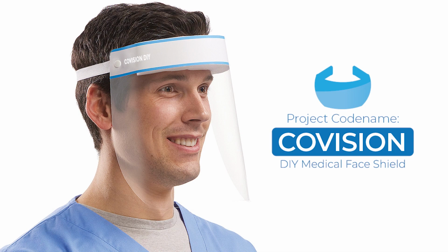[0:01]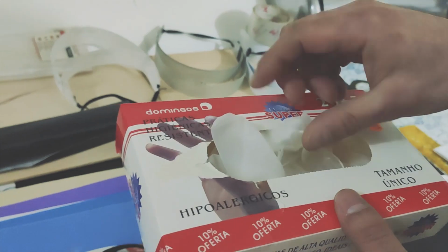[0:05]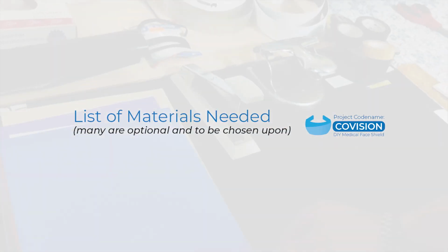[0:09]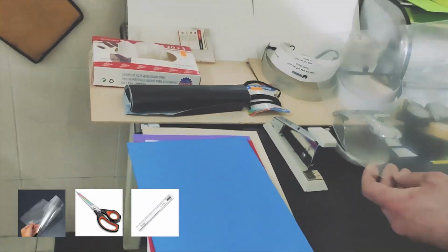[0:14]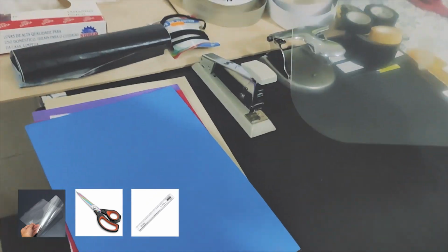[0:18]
So you can be a hero with your family and save lives. So take this DIY challenge and let's do something. In this documentation, we'll learn the basics of how to produce these highly functional face shields using very cheap or readily available household materials. You don't need a 3D printer, you don't need engineering skills, it's easy.
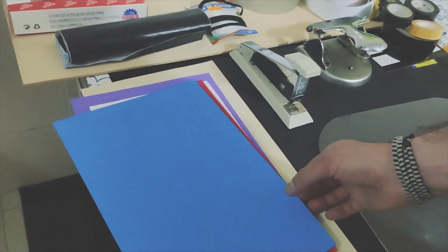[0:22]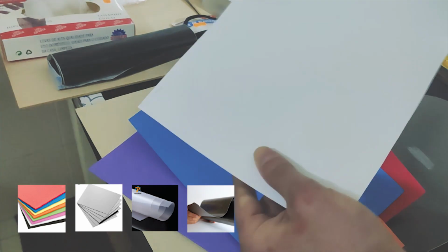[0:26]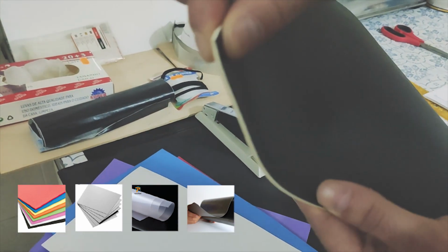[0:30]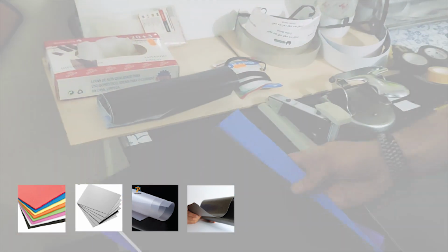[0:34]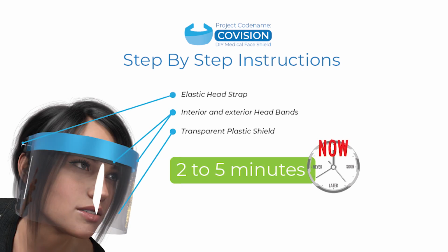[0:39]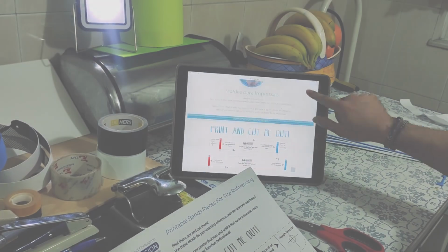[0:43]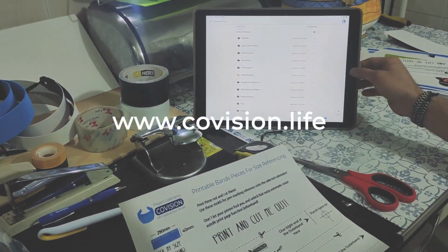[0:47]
Well, we have a lot of materials that we can choose from, ranging from foam sheets, thick poster card, plasticized if possible, flexible plastic sheets, or a wide range of synthetic materials, and try to get them in A4 format. You can visit www.covision.life so you can follow the on-screen instructions so you can make something along these lines. So let's start.
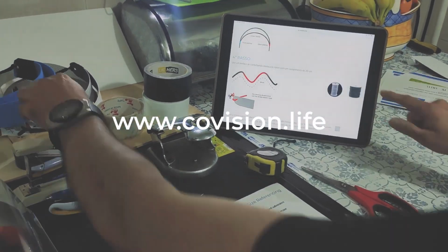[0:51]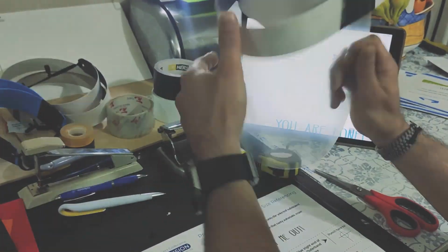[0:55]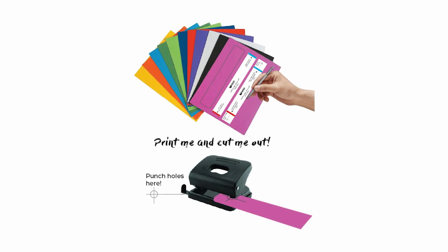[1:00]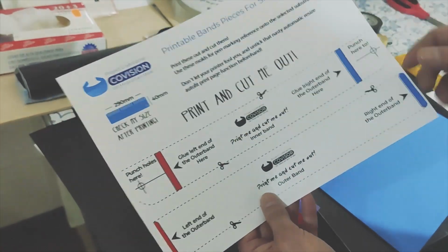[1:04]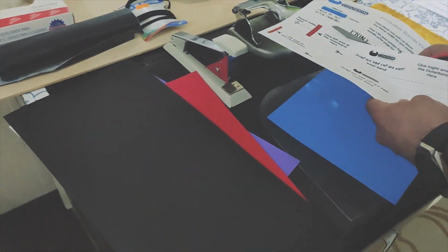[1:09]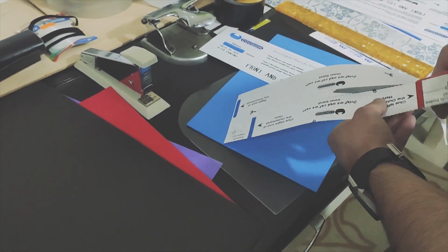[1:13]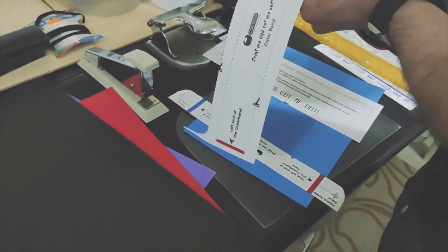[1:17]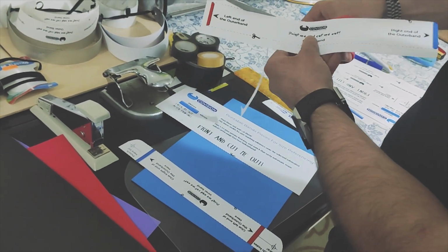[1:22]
Go ahead and print the molds. I already prepared the file, so you just have to download it and cut it, and tick that printer's automatic resize function so you can get the correct size. And please check in the end if you got the 290 millimeters by 40 in each band. They have to be equal. So you can download and print this out. These are just some molds to help you out.
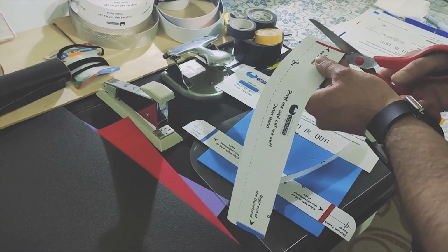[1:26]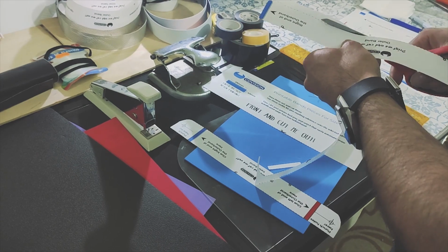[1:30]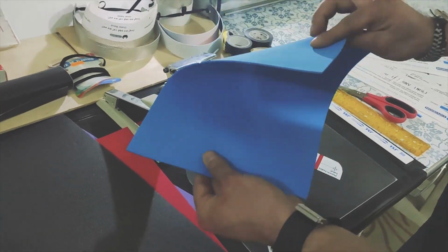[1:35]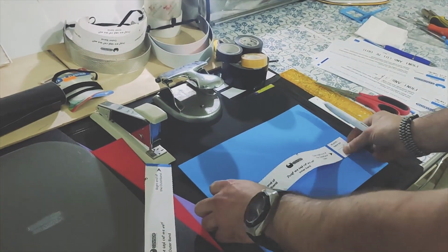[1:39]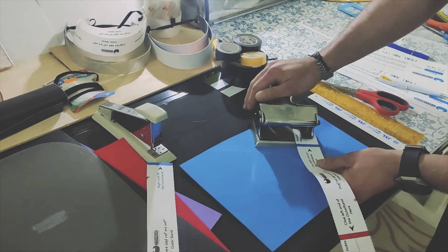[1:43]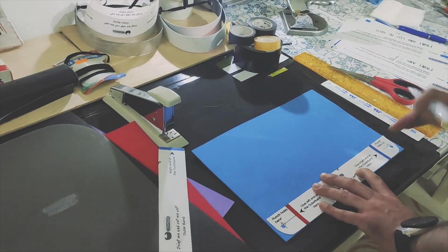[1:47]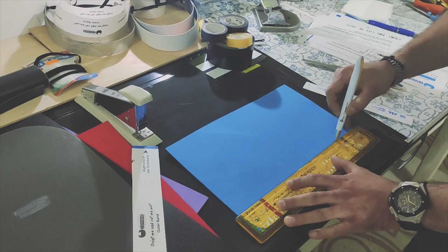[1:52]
Go ahead and put it on the material of choice. In this case, I'm using a foam sheet that is very light. It's very, very easy to cut. And in the end, it will be resistant to the tearing and wearing of the user. So just mark it off, like so. Don't forget to mark the holes and then the outer band.
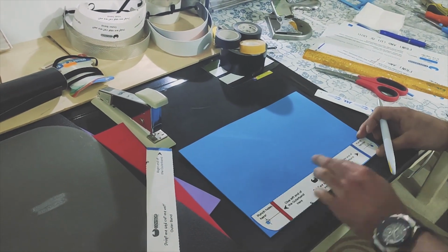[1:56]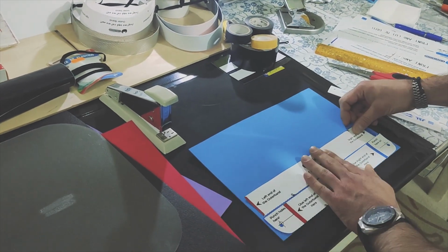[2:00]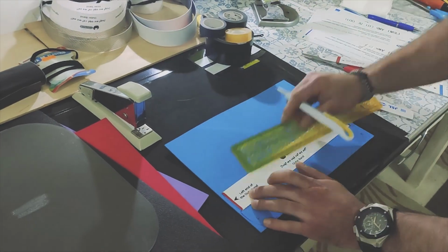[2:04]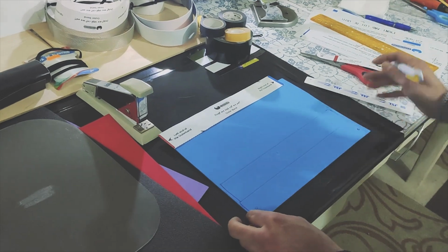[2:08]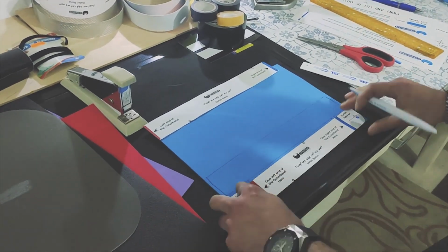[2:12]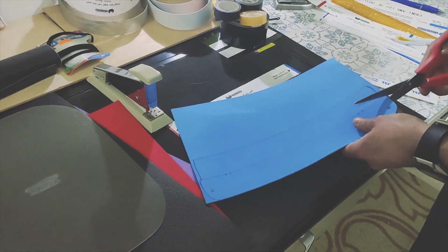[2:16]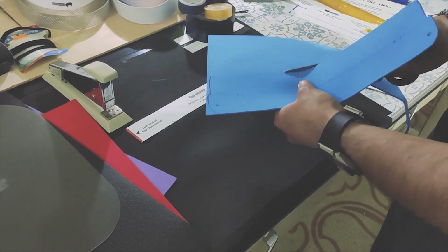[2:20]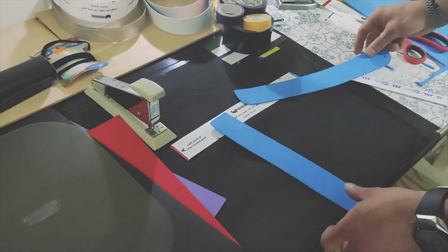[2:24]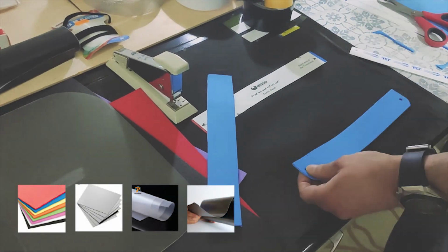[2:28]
Also do the same thing. Use a ruler to help you out and just mark it on. After you cut it, make the cut nice and tight, and you will be able to use the marks of the holes to punch some holes in it so we can later put the elastic strap.
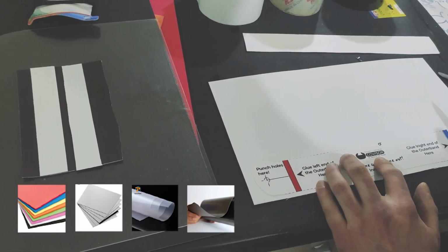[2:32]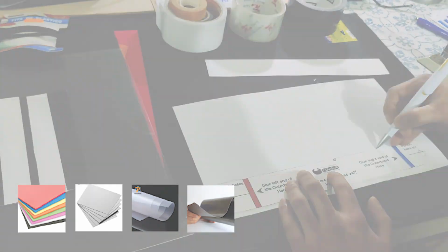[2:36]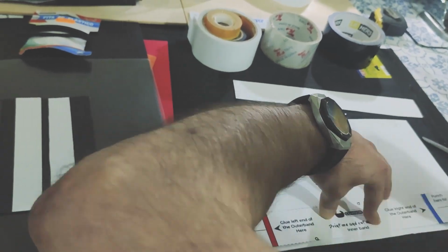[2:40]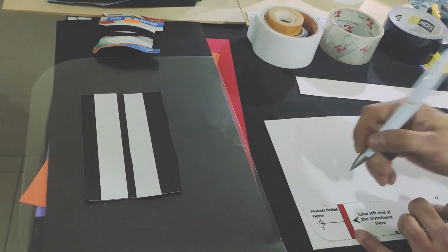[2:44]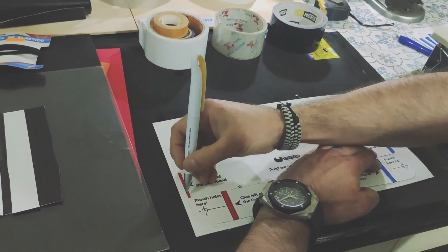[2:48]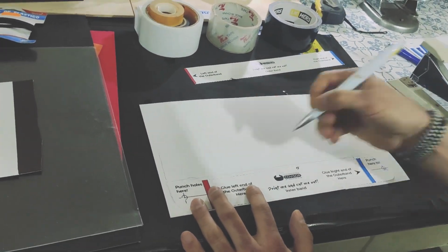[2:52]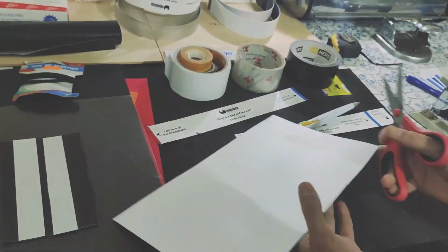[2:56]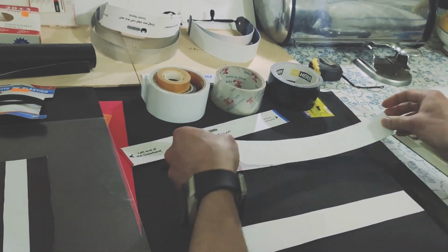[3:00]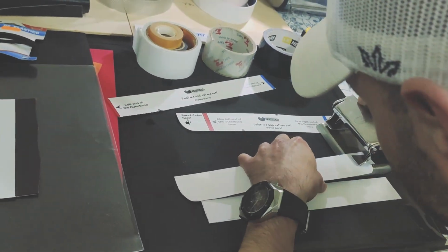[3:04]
And as you can see, there are some markings, red, red, blue, blue. You just place them on those areas. You can mark them with a pen too, so you don't forget where you have to overlay. Don't forget to place the holes in there too.
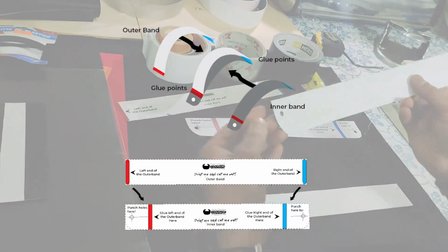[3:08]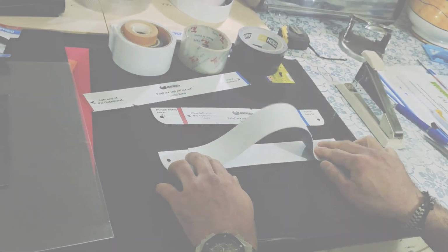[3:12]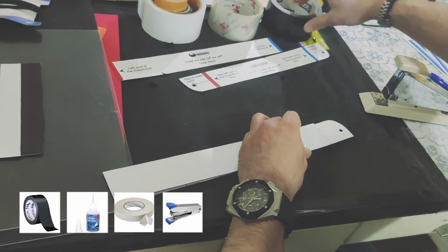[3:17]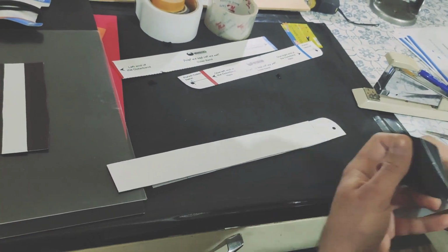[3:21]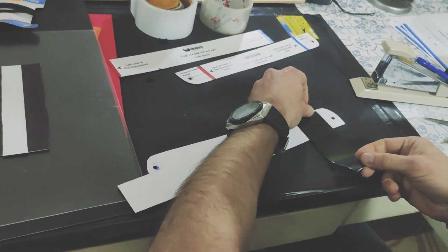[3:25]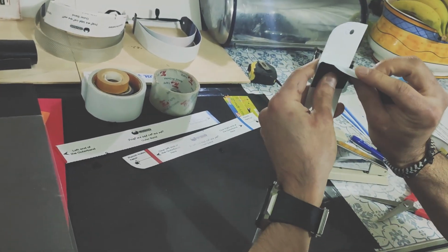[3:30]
And in this case, I'm using a really strong tape, industrial tape, because I find it easier to bind the two bands with this type of tape. And it will be very secure, like so. Do the same for the other end.
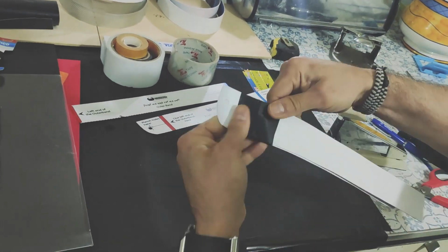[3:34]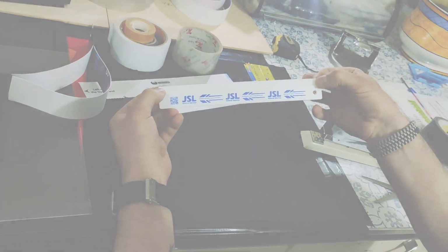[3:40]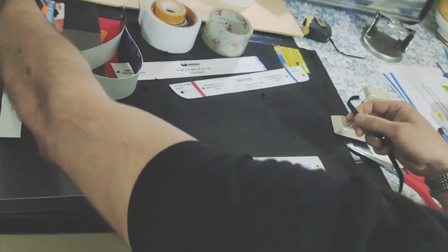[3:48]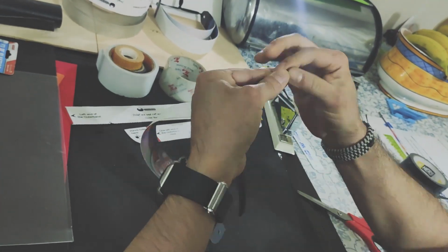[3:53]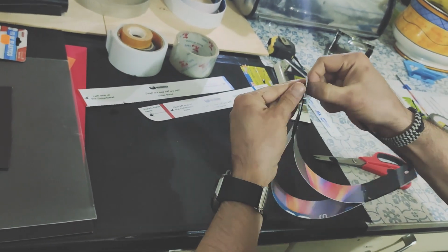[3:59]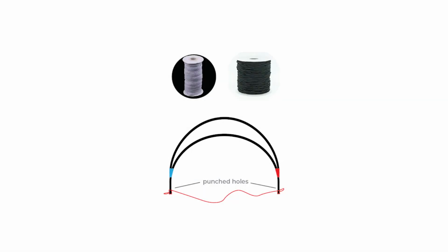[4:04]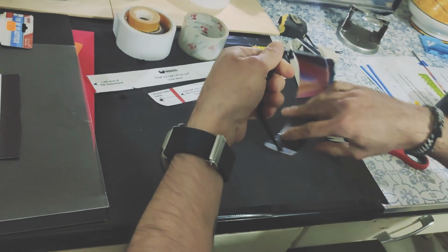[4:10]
I sped up the video so you can see I'm starting to cut the elastic rope. 20 centimeters is enough. It will give you enough length so you can tie some knots. Pass it through the holes, like so. Do a double knot so it can be very tight. You should stretch the elastic till you get a very tight knot, and it will be something like this. Test it out, push it out, so you can see if it's strongly attached and you have a nice headband.
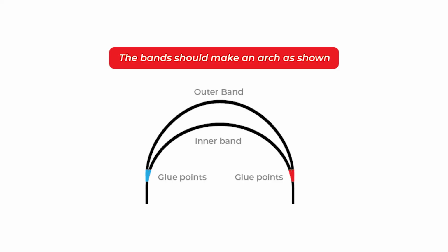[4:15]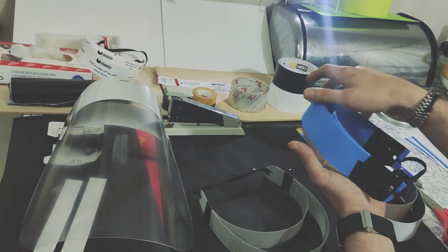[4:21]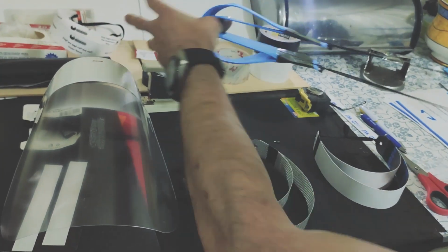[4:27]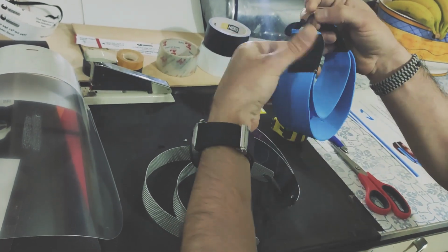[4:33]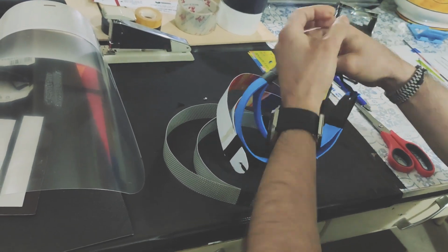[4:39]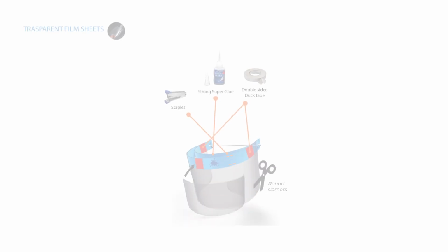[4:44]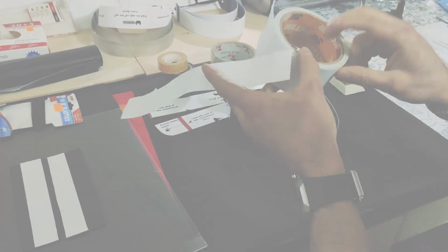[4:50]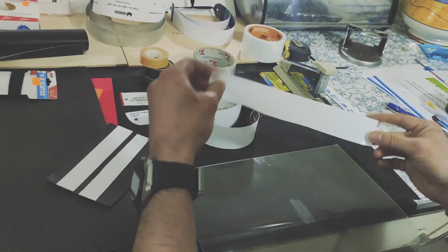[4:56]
All the bands should have an arc shape like that, so the transparent sheet will be far away from the user's nose, and you can see different materials get different weights and sizes, but they're all very sturdy. Even the foam one, see, you can make a little knot on the back strap so it can be adjusted to different head sizes, and still you can make very nice ones from aluminium cuttable material and all sorts of materials. Be creative.
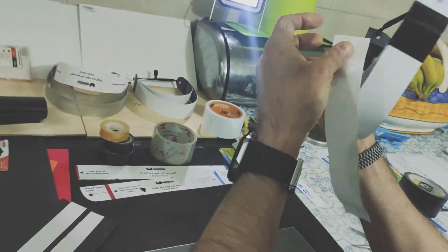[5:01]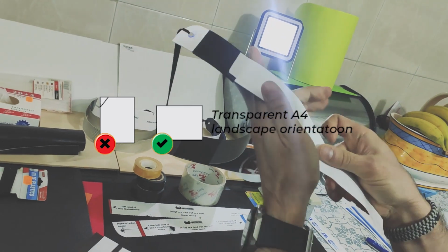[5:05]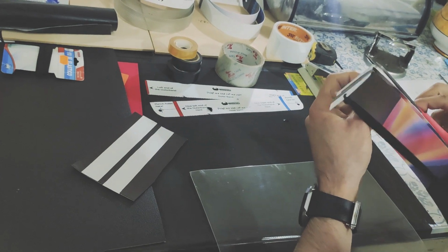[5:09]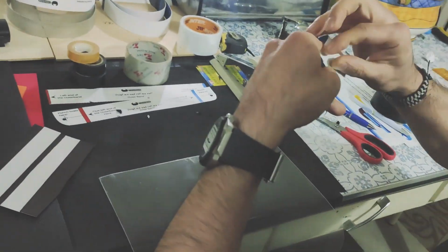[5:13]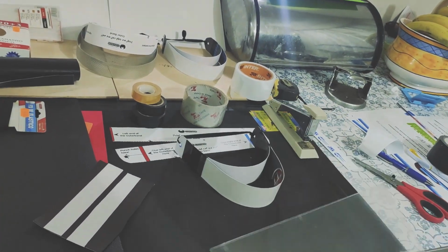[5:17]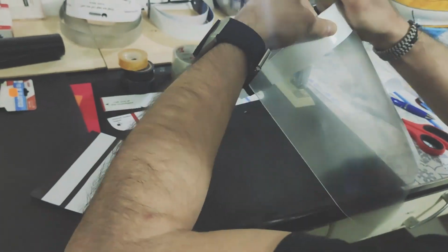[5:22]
So let's do the transparent plastic placing, and I will be using in my example double-sided adhesive tape. So the A4 transparent sheet should be placed in landscape mode, horizontally. I place an entire stripe here. I'm going to remove it and just easily mark the center, like so, and as you can see it's already secure.
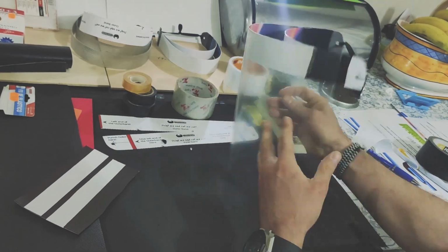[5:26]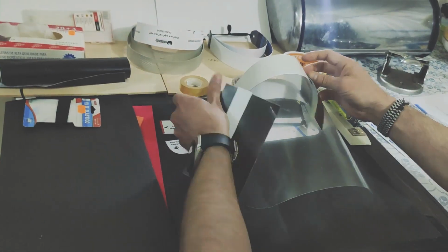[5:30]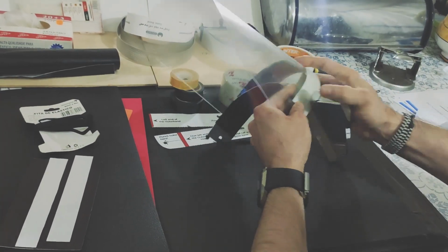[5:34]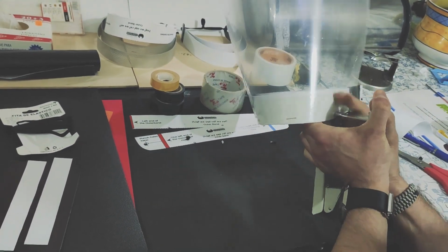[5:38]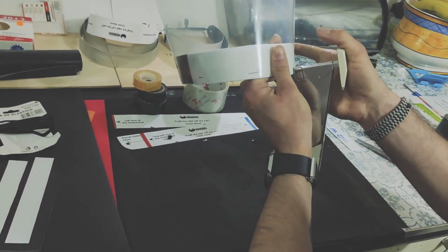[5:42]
You can use a lot of fixing techniques. You can put magnets, you can also do stapling, and you can do double-sided adhesive and stapling, making it even more secure. It's your choice, really. When you do this, make them really resistant and hard to break, because remember, the healthcare professionals will be wearing these a lot of hours.